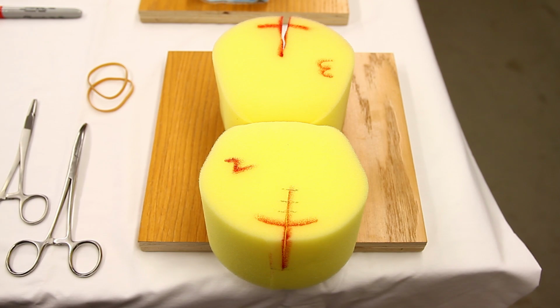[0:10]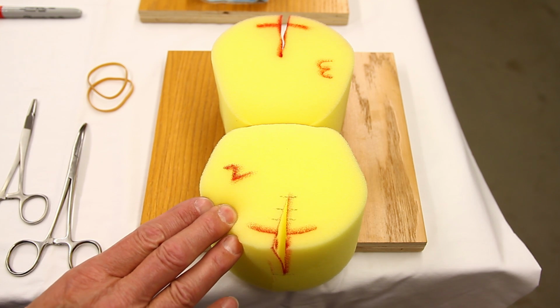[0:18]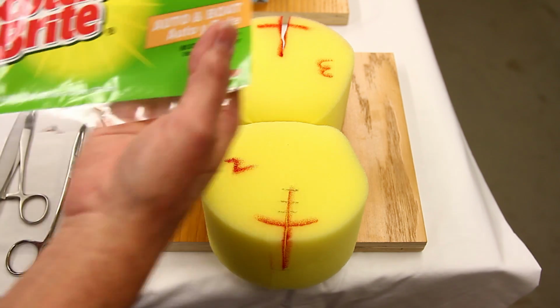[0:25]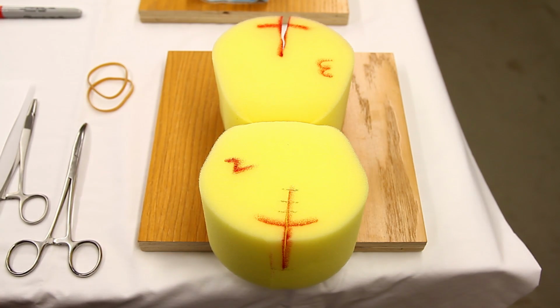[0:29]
I'm Vince LaPorte. I'm here to demonstrate the materials required to use a yellow common car wash sponge, marked here, to teach perineal vaginal laceration repair. This product is common in most auto parts stores. I bought this one from Menards. It happens to be Scotch-Brite brand. Other brands work equally well.
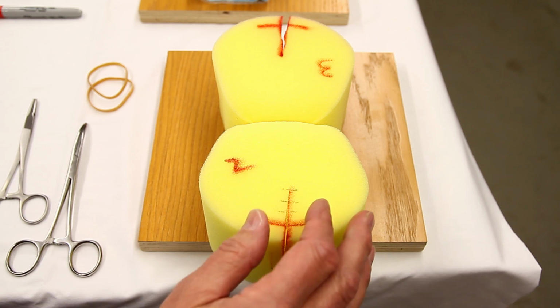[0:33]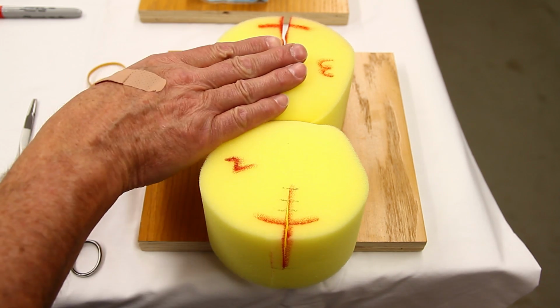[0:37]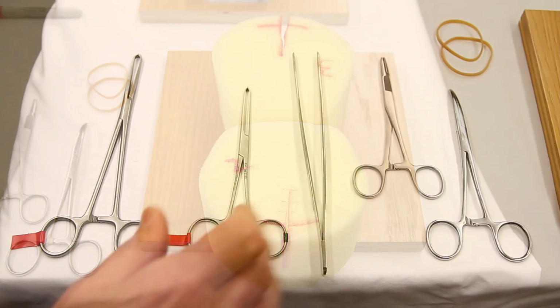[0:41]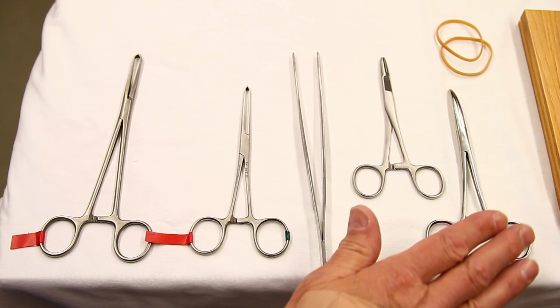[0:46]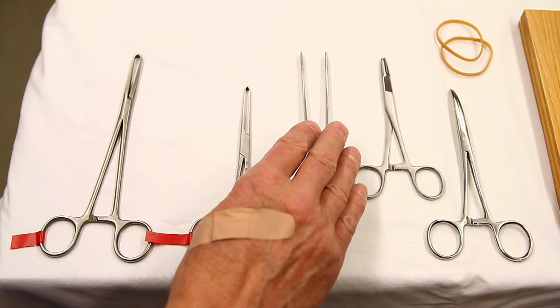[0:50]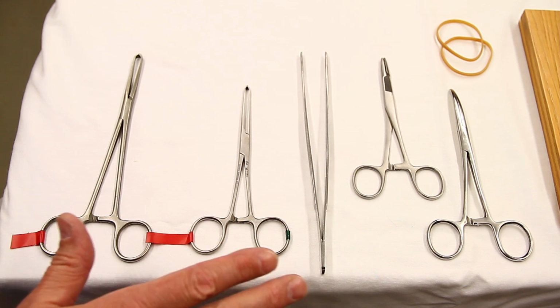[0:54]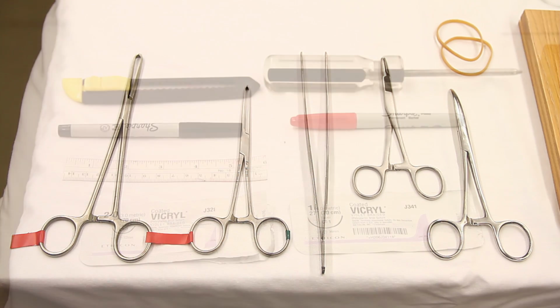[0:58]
We'll prepare the second degree laceration, and separately the third degree laceration, at the end of this instructional video. These are the surgical tools we will be using in this demonstration: a hemostat, a needle holder, thumb forceps without teeth, and a couple of Allis forceps. These are readily available through eBay. You'll see the resource in the text portion of this video.
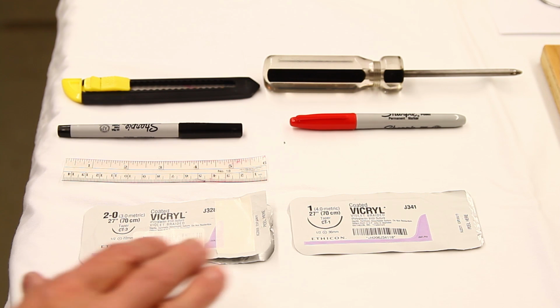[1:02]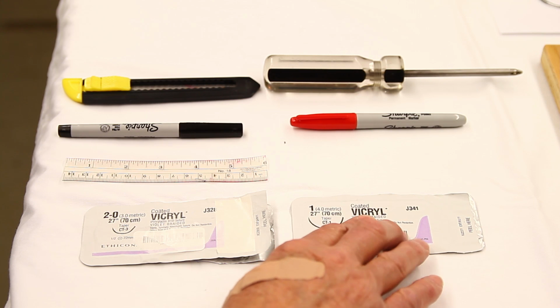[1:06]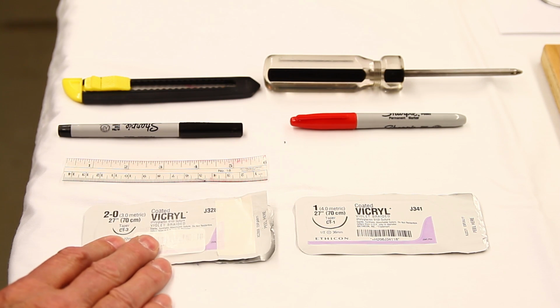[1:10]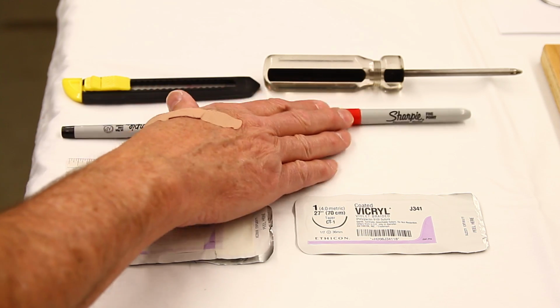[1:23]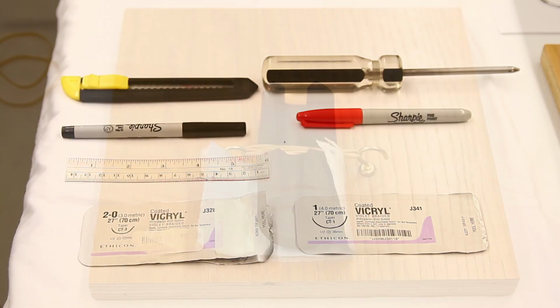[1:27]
Additional items required for this demonstration include suture. We use CT1 needles. These happen to be Vicryl sutures, but other sutures are fine. And CT3 needles. These are available through shopmedvet.com, again indicated in the text portion of this video. Also a common centimeter ruler, a black marker, a red marker, a common Phillips screwdriver, and a box cutter.
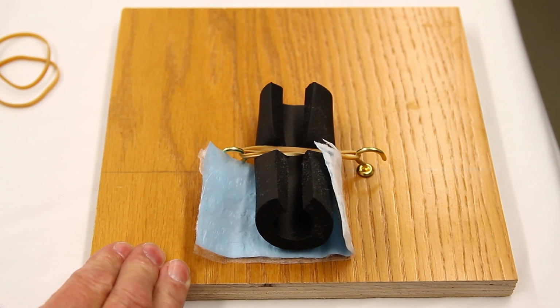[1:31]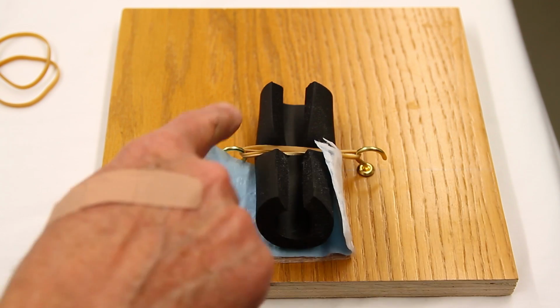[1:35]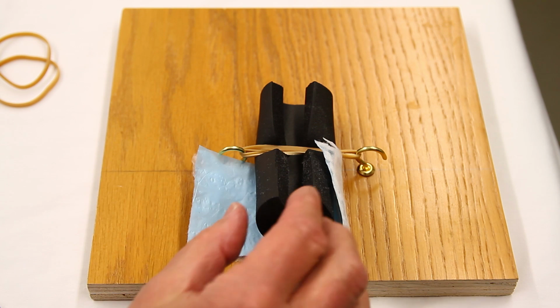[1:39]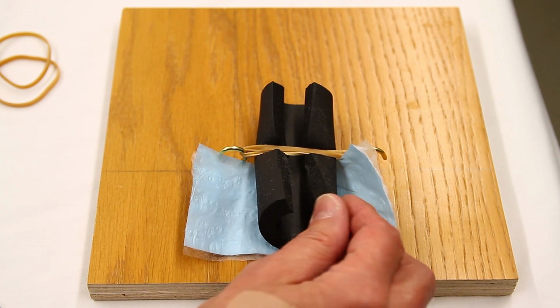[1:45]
Here you'll get a nice view of the plywood block. It happens to be 9 inches by 9 inches, with two cup hooks about 3 inches apart to hold down the yellow sponge, or in this case, the 1 inch very soft foam insulator, again from Menards. This is the very soft version, not the stiffer version.
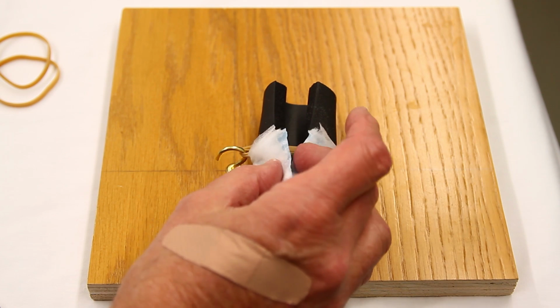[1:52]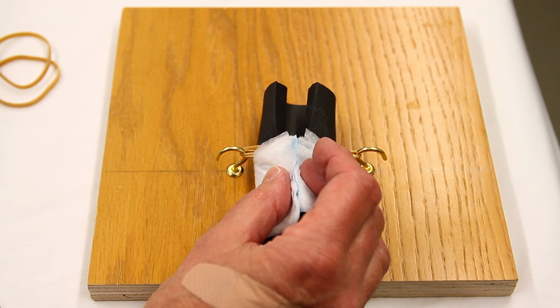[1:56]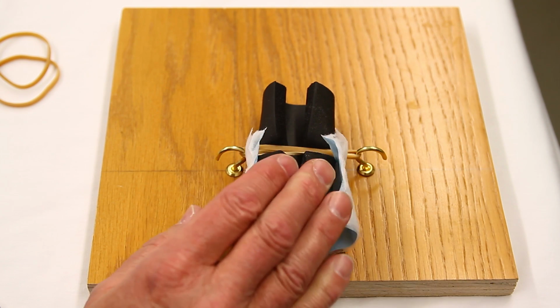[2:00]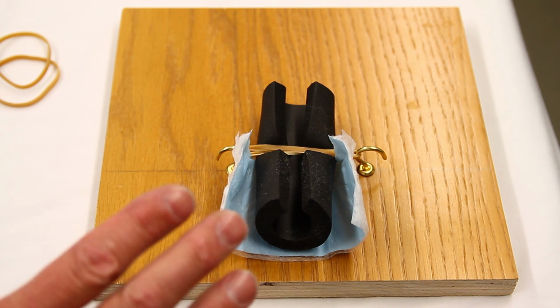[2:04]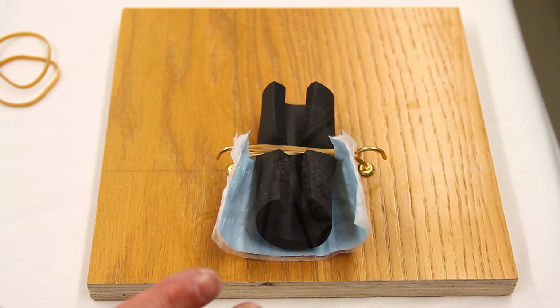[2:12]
Also, this is a strip of chux pad that will be wrapped around the rectal wall to simulate the internal rectal sphincter. This is a very delicate procedure. It teaches students delicacy in suturing. It's not a great example of a rectal wall. It's way too thick, of course, but the concept of delicacy with running suture is presented here in this form.
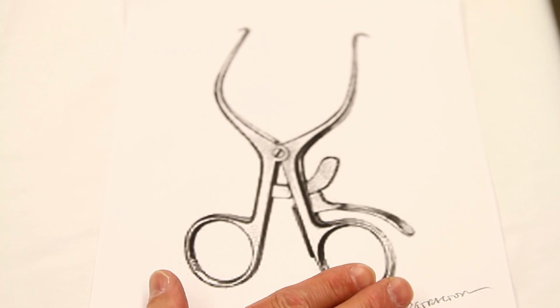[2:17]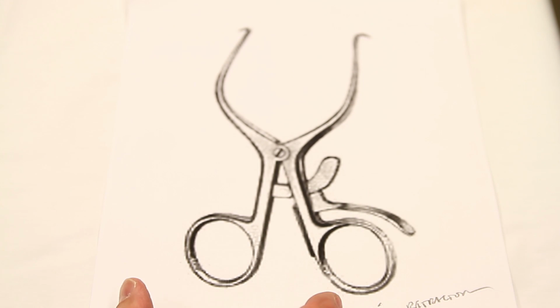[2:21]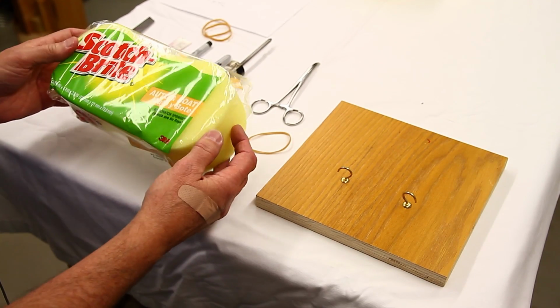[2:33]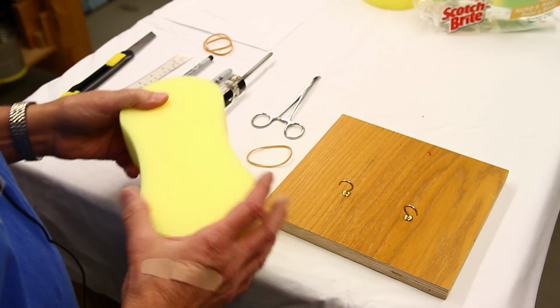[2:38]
This is a Gelpi retractor. It's an excellent retractor for deep vaginal lacerations. It has sharp points, so it's self-retaining. It's an essential item to doing third and fourth degree laceration repairs. They're commonly available and should be in most obstetric departments. This is the common car wash sponge. They're $2 at Menards. We're going to mark it and cut it.
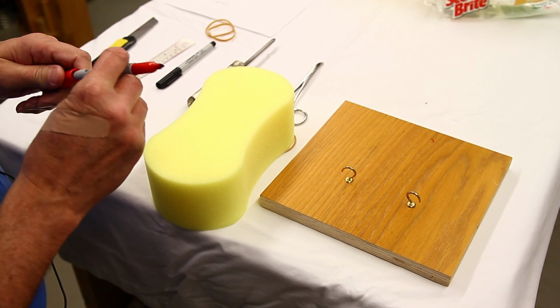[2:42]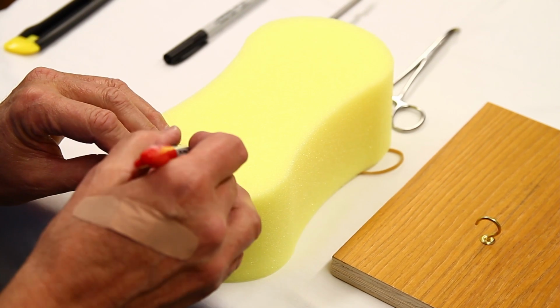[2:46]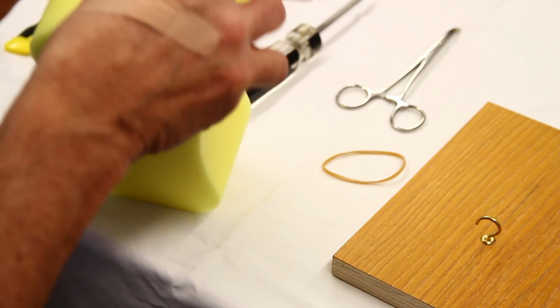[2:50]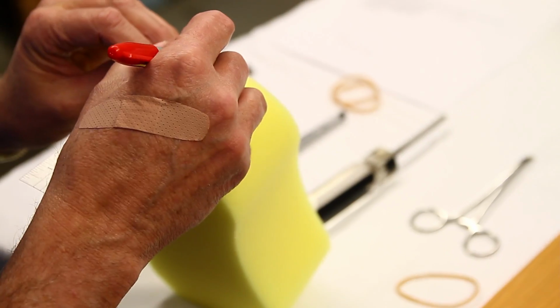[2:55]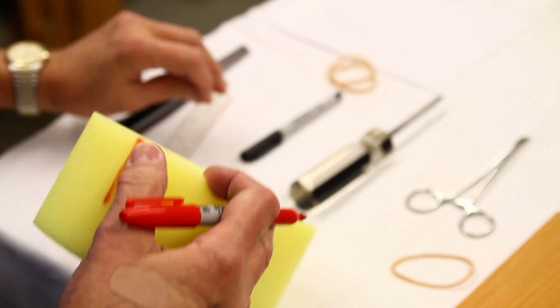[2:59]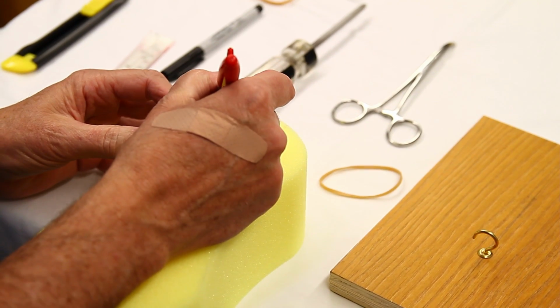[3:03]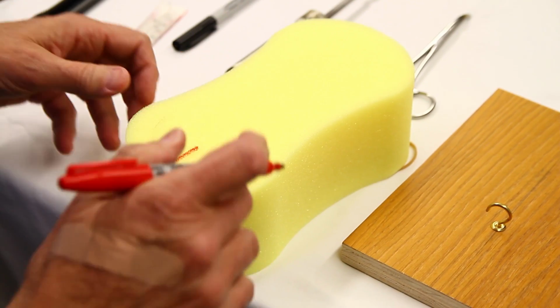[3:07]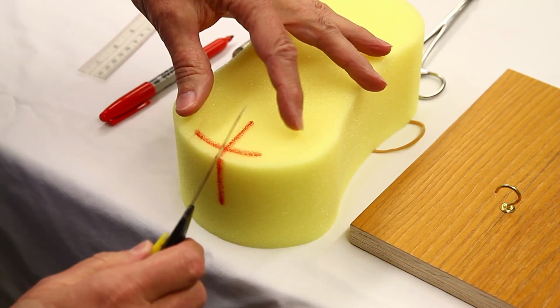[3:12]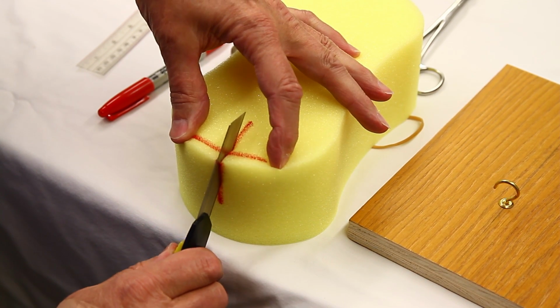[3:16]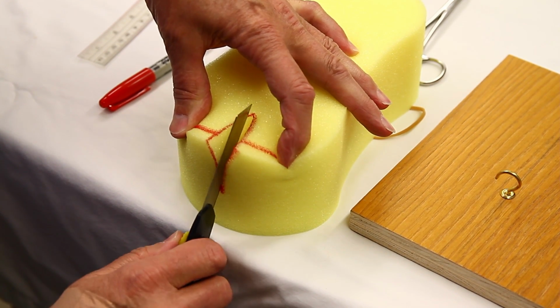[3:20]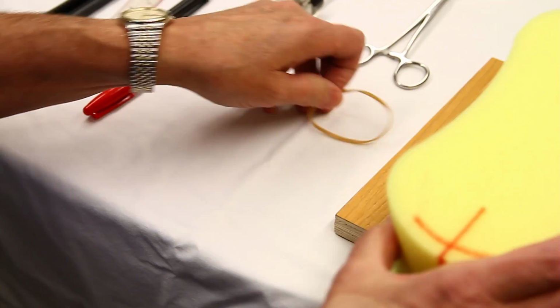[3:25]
So I'll take my red pen, set your centimeter ruler on the sponge, make a 4 centimeter red mark on the top of the sponge, and a 4 centimeter red mark down the side of the sponge, like this. You're also going to make a hymeneal ring mark about 1 centimeter from the edge of the sponge. Then take a common box cutter and slice the sponge right down the red mark to the ends of the red mark. And this will be our second degree laceration model.
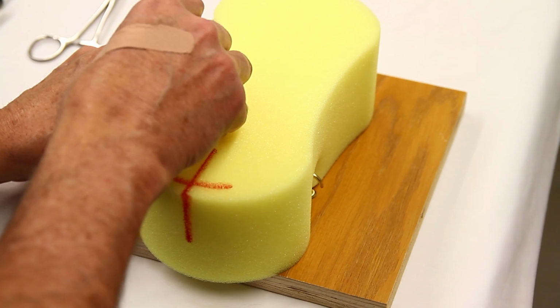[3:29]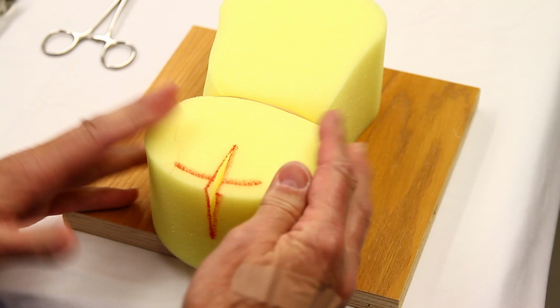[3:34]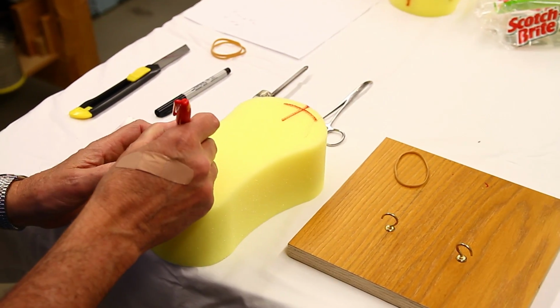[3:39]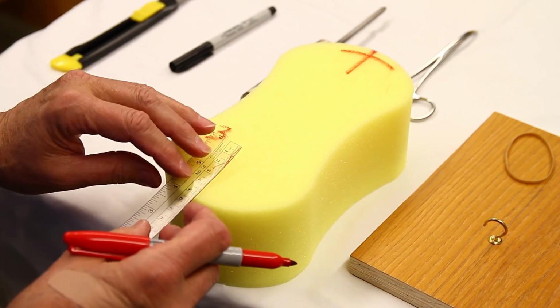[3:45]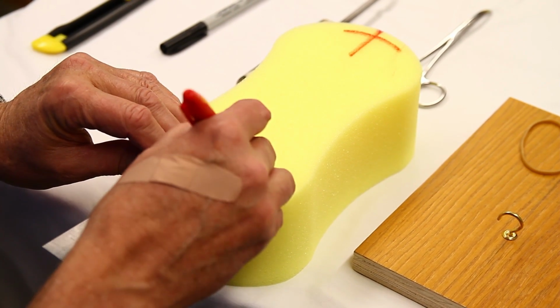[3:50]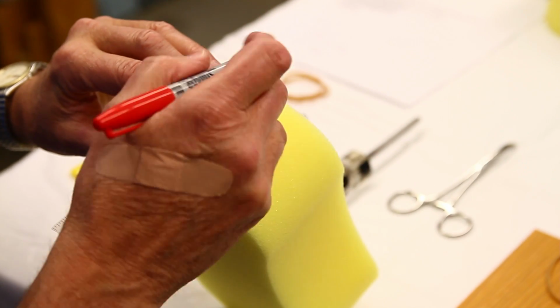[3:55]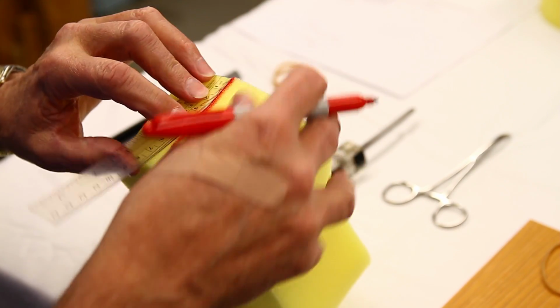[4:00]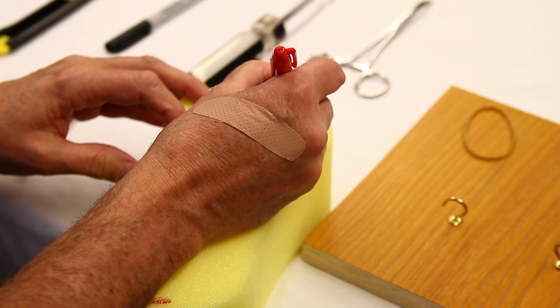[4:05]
We're going to put it in the plywood holder and use a rubber band to clip it in place. Now it's available to suture. Now we'll take the car wash sponge and mark this side 3. This is going to be a third degree laceration. We need to mark the top portion of the sponge a little deeper. That'll be 5 centimeters. And the side of the sponge we'll mark 6 centimeters, as we need more depth to demonstrate the third degree laceration. We're also going to make a hymeneal ring, same place, 1 centimeter away from the edge.
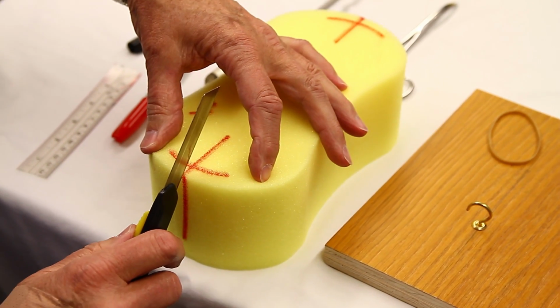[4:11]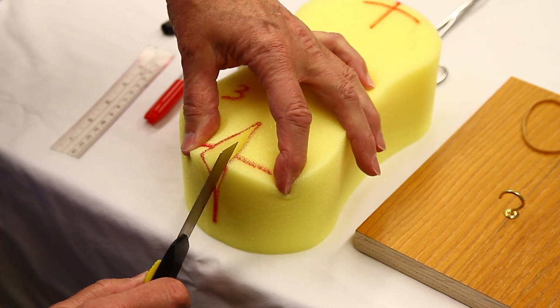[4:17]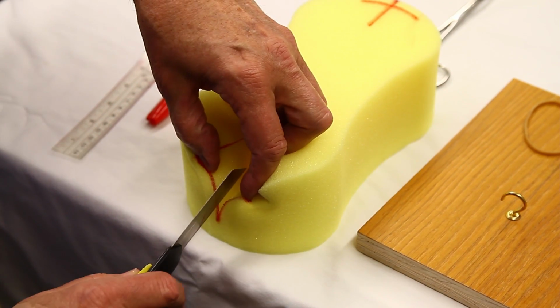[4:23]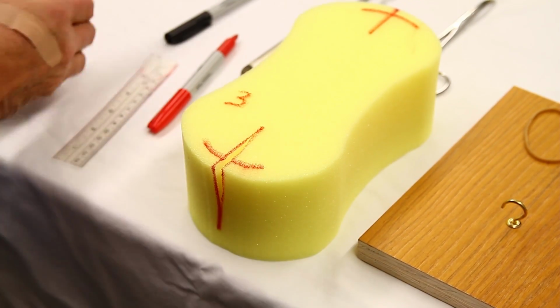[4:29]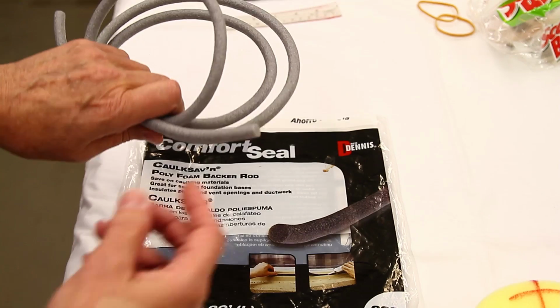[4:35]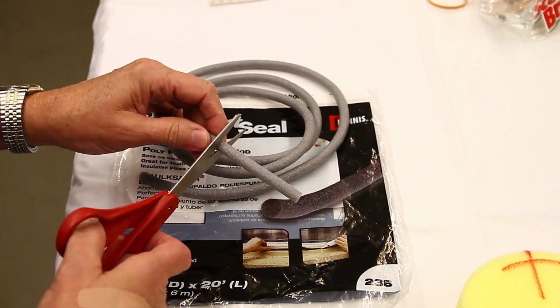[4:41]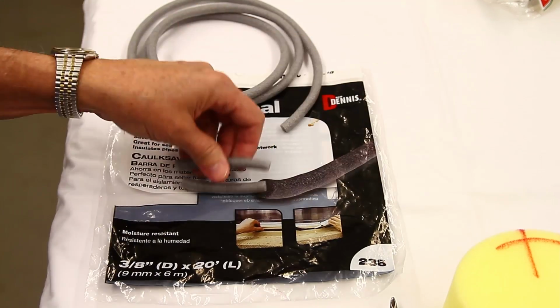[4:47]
Now we'll use our box cutter and open the incision to the extent of the red marks, and we're going to make a little extra room down here to simulate the area where the internal rectal sphincter will lie. We'll be using this Comfort Seal caulk saver, so-called. It's foam encased by a thin layer of plastic. We're going to cut pieces about 3 inches long, and we'll need 2 of them. Those will be used to simulate our external rectal sphincter.
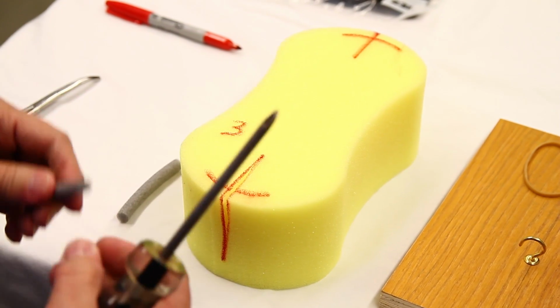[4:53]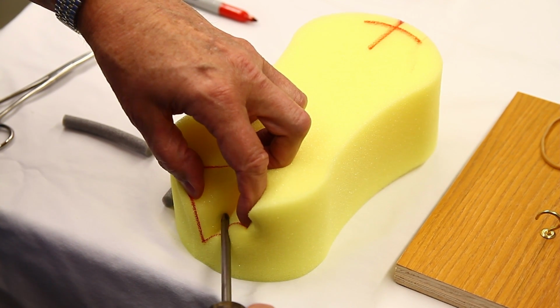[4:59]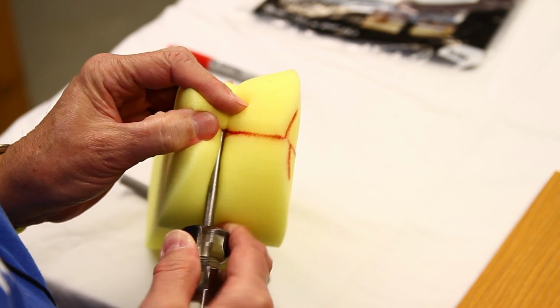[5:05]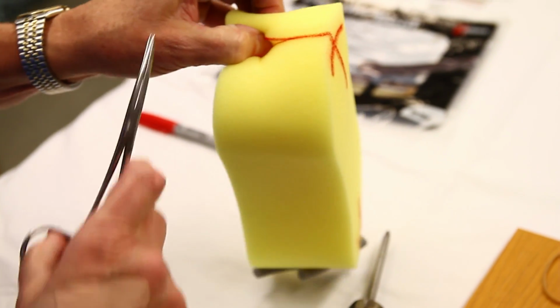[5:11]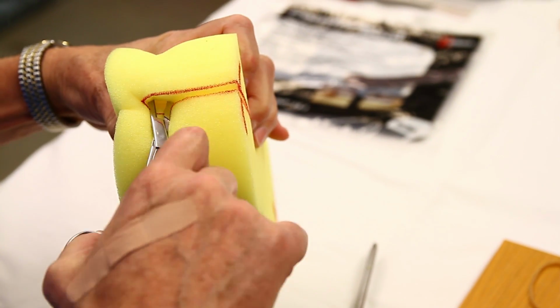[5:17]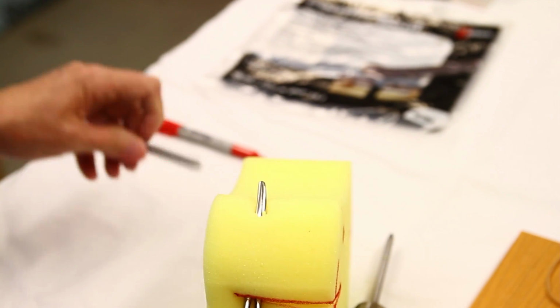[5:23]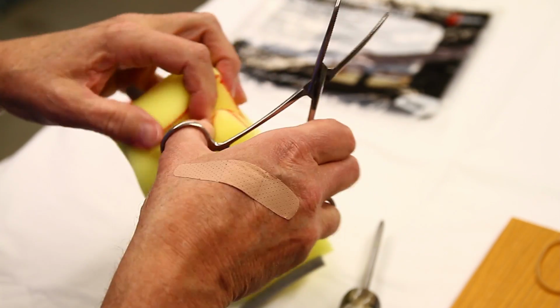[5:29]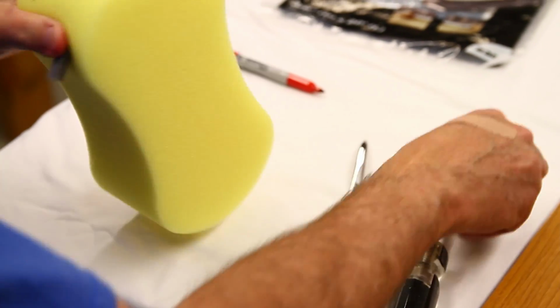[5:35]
To add the caulk saver, stretch the laceration open, reach back 2 or 3 centimeters, and then push laterally to create a little tunnel that we will then expand with a large hemostat. Expand this adequately so the foam is not too difficult to drag. Then take one of the little foam tubes, grasp it, and draw it into the incision so that it's protruding about a centimeter.
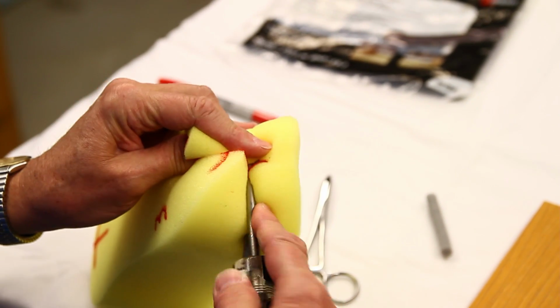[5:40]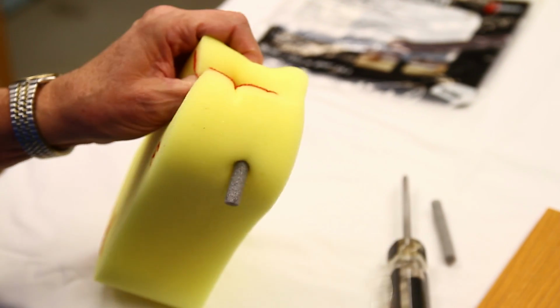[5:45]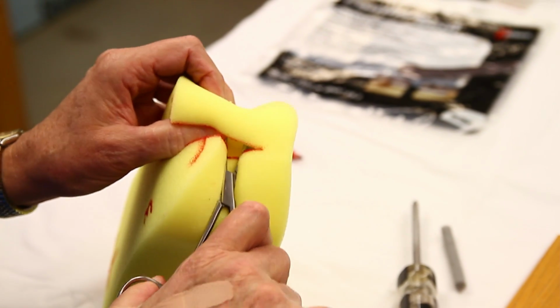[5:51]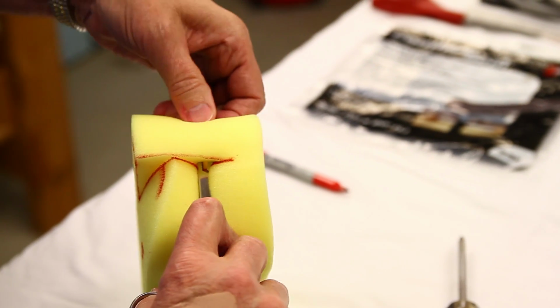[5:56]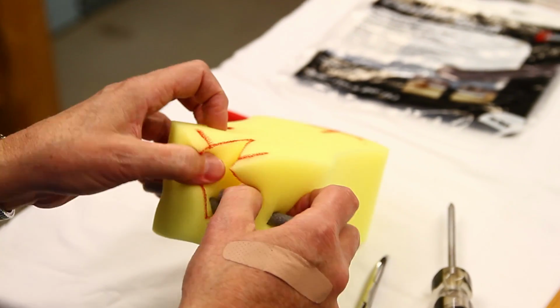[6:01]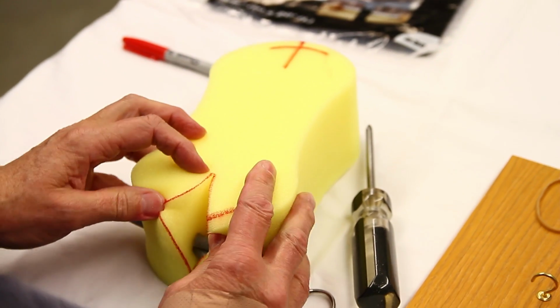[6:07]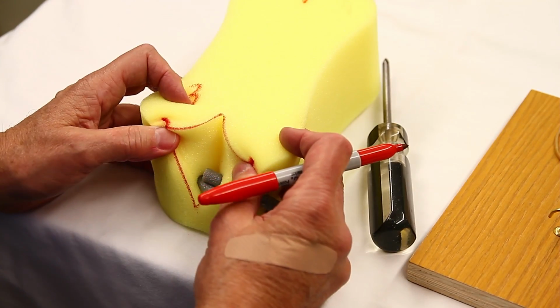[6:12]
We'll do the same thing on the opposite side. Again, take a large Phillips screwdriver and bore a hole through. Hold it open with your fingers while you put a large hemostat in. And then stretch. Remember to stretch adequately so we can get this foam to move eventually. Grab that caulk saver tubular foam and draw it also into the incision about a centimeter, overlapping. And that's the position for our external sphincter repair. And that completes our sponge simulator preparation.
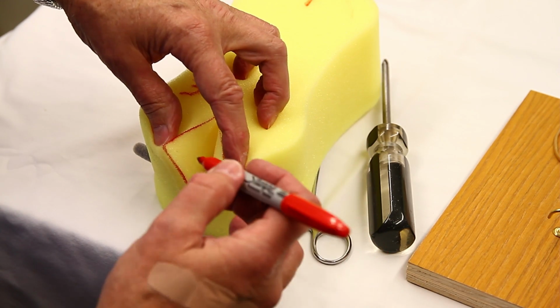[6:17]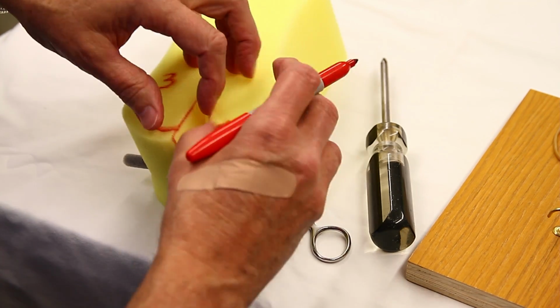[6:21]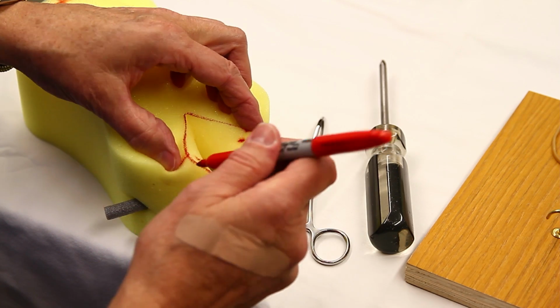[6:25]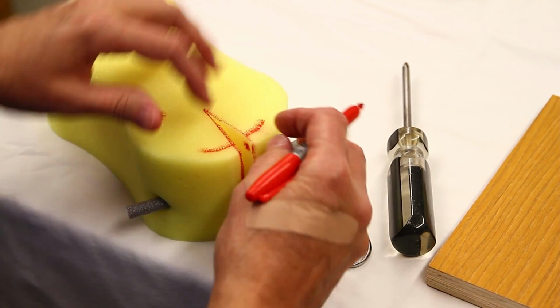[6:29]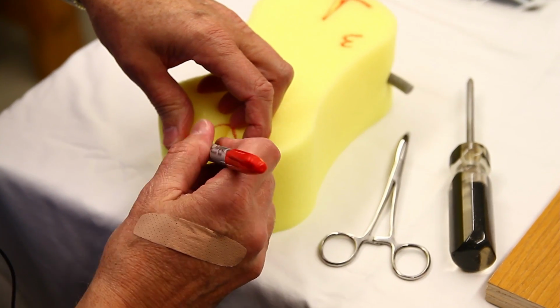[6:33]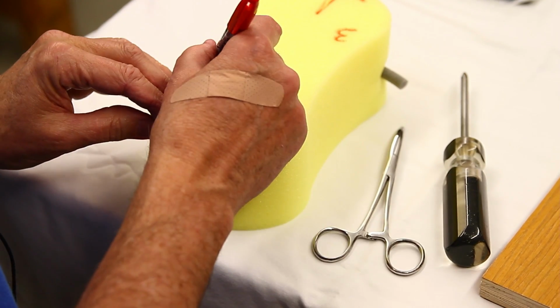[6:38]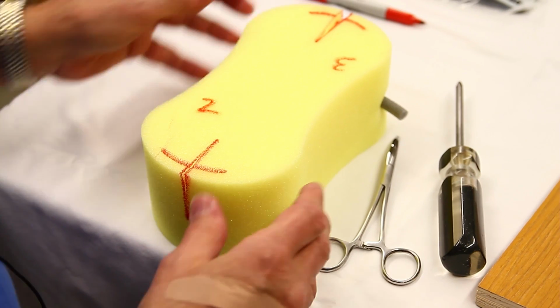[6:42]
I would like to mark one additional spot called the perineal body, just at the angle of this sponge incision. Those are important points. Those two dots have to be reconstructed during the repair, and we'll mark that as well on the second degree side. Same location, and we'll mark this with a 2. This is the second degree laceration. Now our sponge is complete and ready to use.